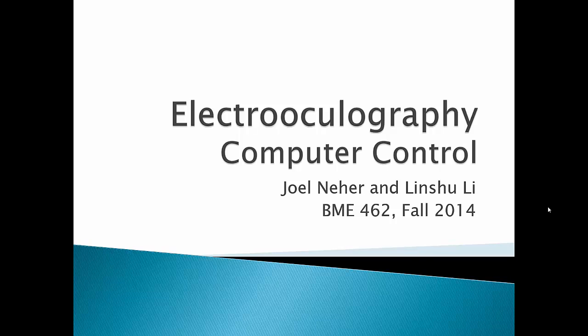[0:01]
Hi, we're Joel Neher and Linshu Lee, and this is our final project presentation for Biomedical Engineering 462, Medical Instrumentation at the University of Wisconsin-Madison. The project we chose to go with was computer control with electrooculography.
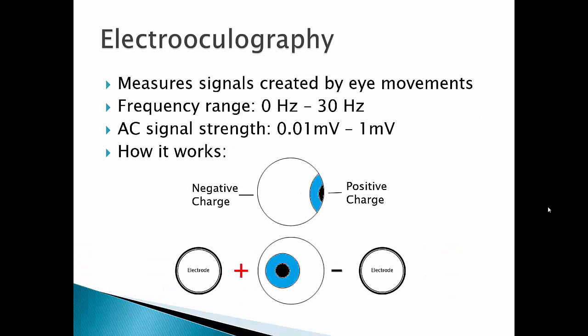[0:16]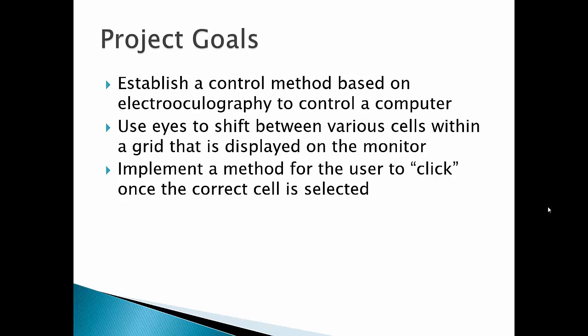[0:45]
Electrooculography measures the signal created by eye movements. The eye behaves like a dipole. It has a positive charge on the pupil and a negative charge on the retina. When your eye moves to the left, it creates a slightly positive signal on the left and negative on the right. It has a frequency range of 0 to 30 Hz. Most of the useful frequencies are below 10 Hz. The AC signal strength is 0.01 millivolts to 1 millivolt.
Our project goal is to establish a control method based on EOG to control a computer. Use eyes to shift between various cells within a 5x3 grid that is displayed on the monitor, and implement a method for the user to click on a selected cell.
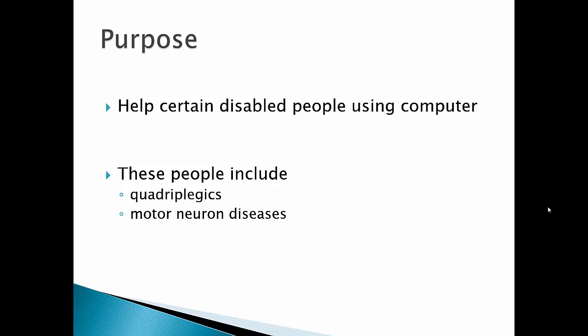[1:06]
The purpose is to help certain disabled people use computers. This will help them to better communicate with others and be more productive. These people include quadriplegics and those with motor neuron diseases such as the famous ALS.
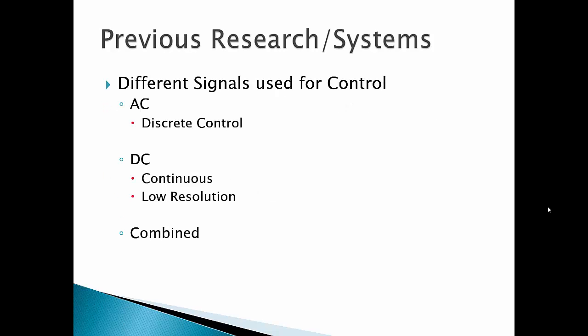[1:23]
Previous research has shown different methods for signal control. There are AC control, DC control, and combined. AC control is a discrete control. It detects an AC pulse of the eye movement. DC control behaves better in continuity. It has continuous control, but it has low resolution. The combined control combines both AC and DC to produce a better performance.
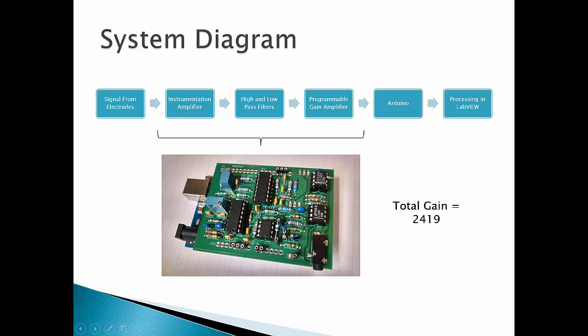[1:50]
So this is a system diagram for our EOG-controlled computer mouse. Once we get a signal from the electrodes, the signal passes into an instrumentation amplifier. Once out of this, the signal goes through a series of high-pass and low-pass filters. The frequency range that we desire is 0 to 10 Hz. The low-pass filter is fifth order, which means that it decays at a rate of 100 decibels per decade. Once the signal passes through these filters, it's then sent into a programmable gain amplifier. The reason for this name is that the gain can be controlled through a potentiometer in the circuit.
All of these blocks, the instrumentation amplifier, the high-pass and low-pass filters, and the programmable gain amplifier, exist on a PCB that was custom created in Eagle. Once the signal passes out of the programmable gain amplifier, it gets sent to the Arduino, where the Arduino converts it from an analog signal to a digital signal, before sending it over the serial port to be processed in LabVIEW. The total gain of our system is roughly 2,419.
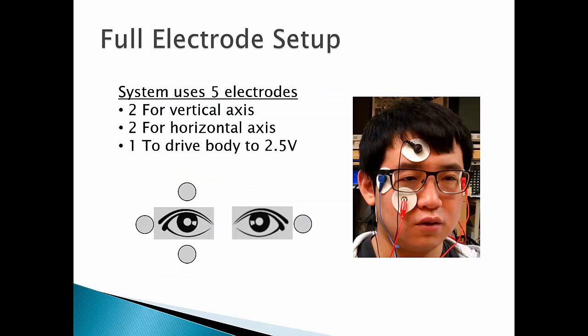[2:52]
This is the full electrode setup for our system. Our system uses 5 electrodes, 2 for the vertical axis. You have an electrode that goes above one of the eyes and below one of the eyes. There are 2 for the horizontal axis, which sit on either side of the face. And there's 1 electrode that drives the body to 2.5 volts.
The reason for this is that the Arduino microcontroller can only read in analog values from 0 to 5 volts. So by establishing a baseline of 2.5 volts, this gives us a 2.5 volt range on both sides of this baseline that our signal can exist upon. On the bottom of the screen, you see a diagram of the electrode placement, and on the right, you see the electrodes actually in action.
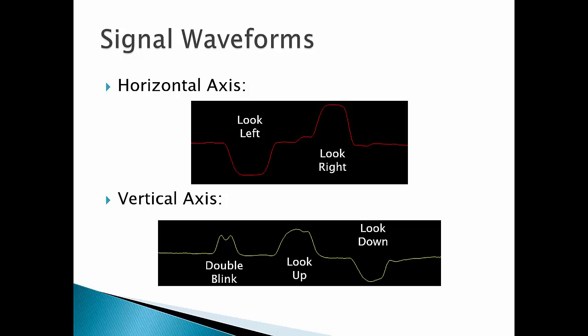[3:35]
Once we have the signal in LabVIEW, we need to determine what the user is doing: if they're looking left, looking right, blinking, looking up or down. On the horizontal axis, the signal looks like a negative pulse when the user looks left. When the user looks right, we have a positive pulse. The vertical axis is much more complicated, because on the vertical axis, we also have a double blink, which corresponds to a user clicking. This double blink signal is similar in magnitude, and even a little bit in shape, to the signal that happens when the user looks up. When the user looks down, we get a negative pulse.
So, this image is a shot showing Linshu about to demo our EOG-controlled computer mouse. On the left, you can see the computer screen. On this screen, you see a 3x5 grid of LEDs. Currently, the center LED is illuminated, but as we play the video, Linshu is going to be calling out which direction he's moving his eyes. And you'll see that the LED that's illuminated moves along with what he says. Above the LED grid, you also see a white bulb. This bulb will flash red whenever Linshu says that he blinks.
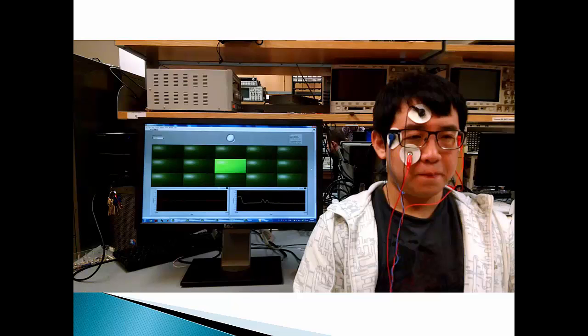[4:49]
Just one thing to note briefly is that normally Linshu would be facing the screen when he's using this program. Because of this, as a user, when we see him look right, he's actually looking left. So we'll start the video now.
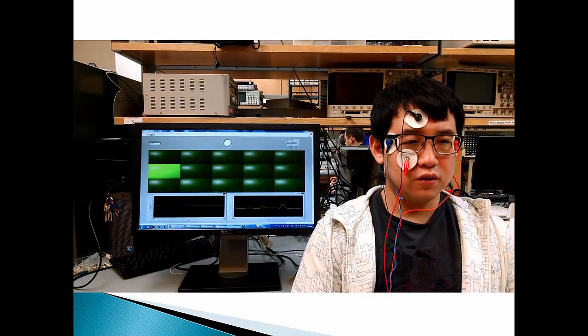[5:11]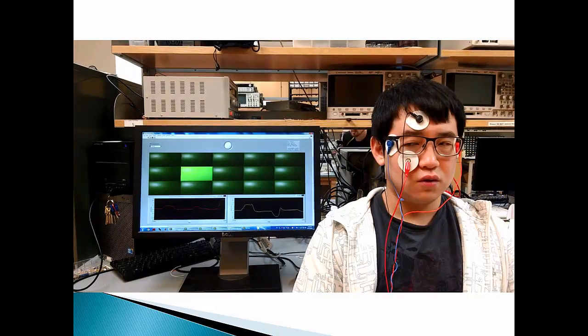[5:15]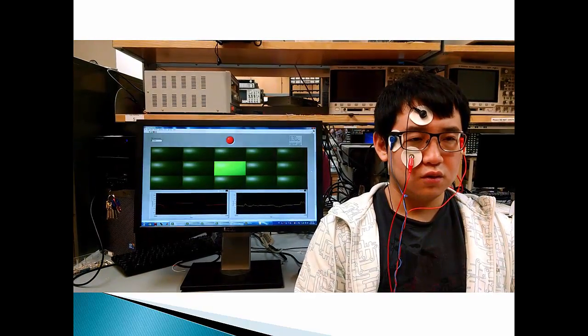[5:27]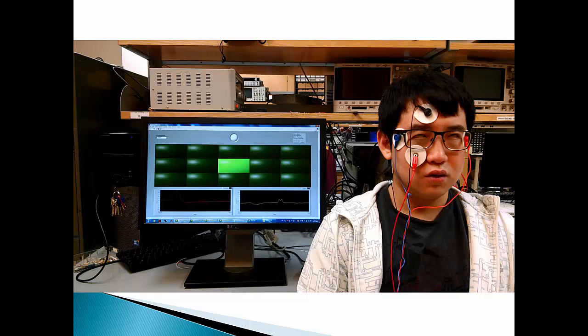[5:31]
As you can see, the system works fairly well. Within that video, there was one error. When he said he was looking left, the system also moved down. The reason for this is not necessarily that the signal is malfunctioning, it's that this system actually requires a bit of a learning curve. If you think about it, when you look left, sometimes you might be slightly looking up or looking down. So when you use this system, you really need to focus on what you're doing. This would obviously become easier with practice, but it's just something to touch on now.
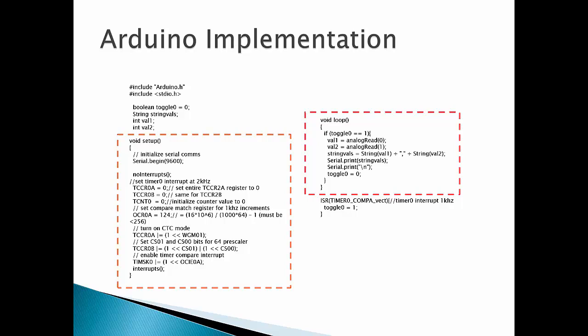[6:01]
On screen now is the full Arduino code that's used for our system. Although it might look complicated, it's actually very simple. The red box on the right contains the main loop of the program. All it does is read in values from the analog pins, which is where the PGA of our circuitry outputs to the Arduino. It samples these values and then sends them over the serial port to the computer.
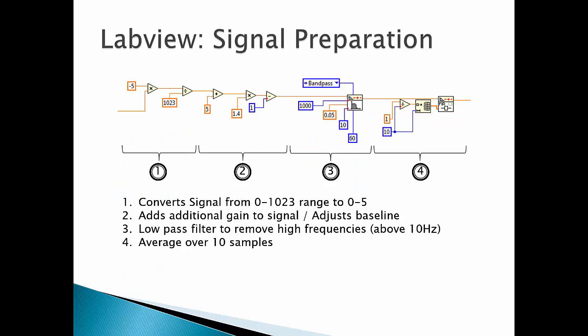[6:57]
On the left side of the screen, you just see a setup within that orange box. So the first thing that needs to be set up is the serial port. This is necessary to actually communicate between the Arduino and the computer. The second large block of code within that box is setting up a timer. This timer is set up to generate interrupts at 1 kilohertz. Every time an interrupt happens is when we know to read the analog signal in and send it to the computer.
So, now on to LabVIEW. Once the signal passes into LabVIEW, there are several things we have to do to get the signal ready before we detect waveforms from it. The first is that we need to convert the signal from the 0 to 1023 range that the Arduino sends to the computer into a range of 0 to 5 volts. The second block just adds additional gain to the signal and also adjusts the baseline. Then there is a filter to remove frequencies above 10 Hz. This gets rid of all of the power line frequency that would normally cause noise within a system. Finally, we just have an averager, which averages over 10 samples to smooth the signal.
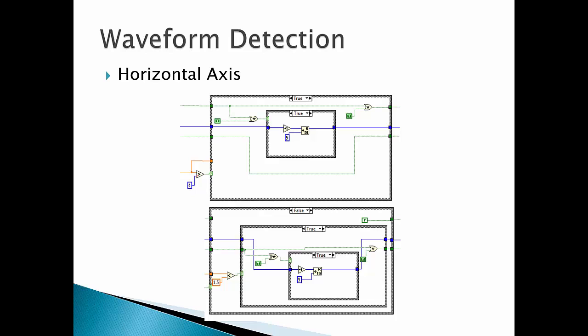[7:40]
Now on to waveform detection. I'm going to spend quite a bit of time on this section because it's fairly complicated, and I'd like to really convey what's going on here. Once the signal has been filtered and amplified, the next step is to detect if any of the waveforms that were shown in the previous slide occur. This is done by examining if the current signal exceeds certain thresholds. The code on the screen is a case structure which can detect if the user looks left or right. If the user looks right, the signal will be greater than 4, and the true portion of the case structure will be executed. Once inside, Boolean logic is first used to determine if the signal is in the process of crossing the threshold, or if it is already sitting above the threshold.
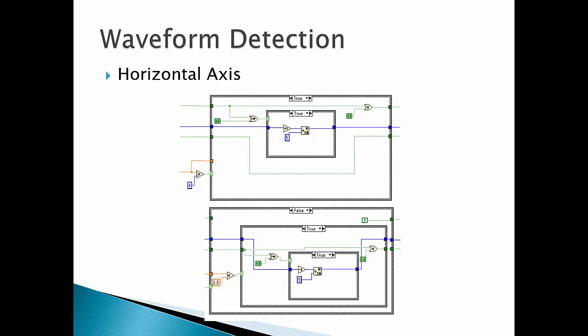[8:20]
If the signal has just crossed the threshold, then a wraparound counter is incremented. This counter ranges from 0 to 4 and corresponds to which LED column contains the currently illuminated LED within the 3x5 grid. The false section of this case structure is shown at the bottom of the screen. Within this case structure, the signal is compared with the value of 1.5 volts, which is the threshold voltage for when the user looks left. A similar method is used for the vertical axis. The only difference is that the upper and lower thresholds are different, and also that the wraparound counter goes from 0 to 2 since there are only 3 rows in the LED grid.
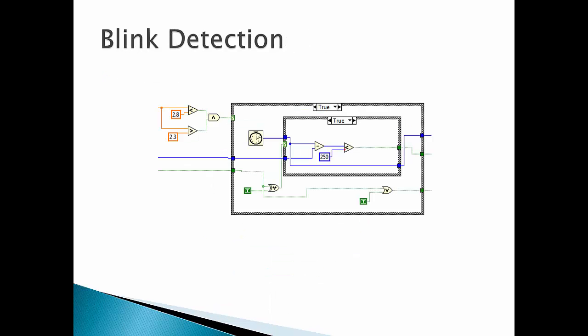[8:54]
Now on to blink detection that is used for clicking. Click detection was the biggest hurdle that was faced in this project. This is because the signal for looking up is similar to the signal when the user blinks. In fact, every time the user looks up, the signal passes through the threshold range that corresponds to blinking. This threshold range is from 2.3 to 2.8 volts. This is slightly higher than the baseline for the vertical axis, which is 2 volts, and slightly lower than the threshold for looking up. Because of this, it was decided that the user would have to blink twice in succession for a click to occur.
Once the signal first crosses into this threshold range corresponding to a blink, a timer is started. If the user is attempting to click, the signal will fall out of this threshold range and cross back into it again. A second time value is measured, and these two time values are compared. If the difference between these times is less than 250 milliseconds, then an output signal is set to 1, meaning that a click has occurred.
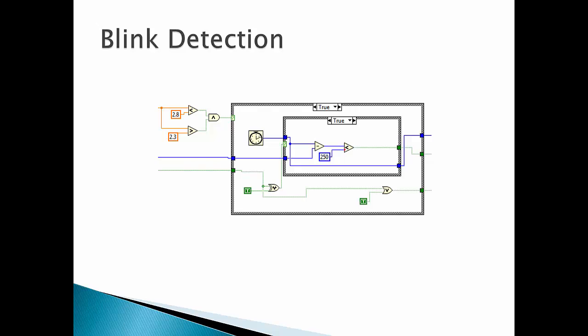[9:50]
Finally, onto the last section of this code, which is the LED display. The LED display consists of a 3x5 grid. Within this grid, only one LED can be on at one time. In order to achieve this, the signals of the counters, which correspond to the rows and the columns that are currently being illuminated, are passed through a significant amount of Boolean logic to determine which exact LED should be illuminated.
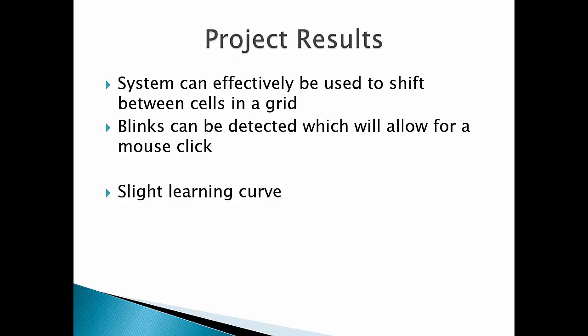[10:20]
So the results of the project were fairly promising. The system was shown to effectively be used to shift between cells in a grid. In our case, the grid was 3x5, but in reality, you could increase that grid to whatever size you want. Once the correct LED is illuminated, you can blink twice to detect a click. The final thing I wanted to mention is that there is a slight learning curve to using this system. Moving your eye solely left or only right without moving it up or down is something that takes getting used to.
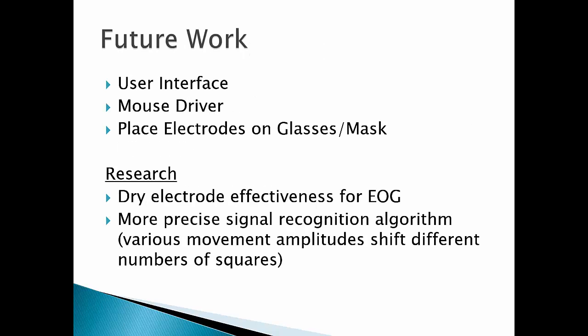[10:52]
The future work of our project is to develop a specific user interface that implements the grid operation. Also, we need a mouse driver to implement all the code we have. We are also considering placing electrodes on the glasses or masks so that we can integrate everything into one part. It provides more effective and more efficient electrode placement. More research needs to be done to use dry electrodes instead of the silver chloride electrodes we have right now. We need to test the effectiveness of dry electrodes in EOG applications. Also, we need to increase the precision of our algorithm to get a better result and achieve better control. If this signal recognition algorithm is made more precise, it might reduce the time of that learning curve.